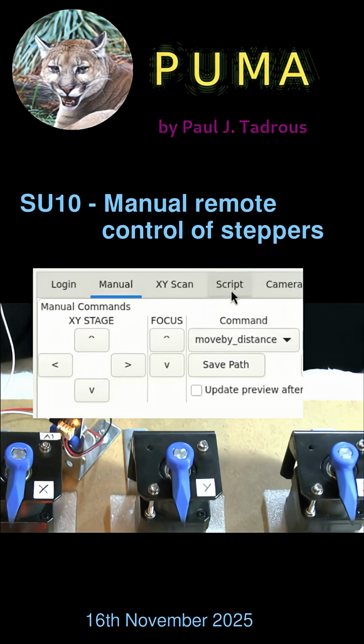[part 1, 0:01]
So I've made a longer video on my Patreon page about the use of these manual control buttons, but I just want to do a quick short video to show you these in action. So these allow you to remotely control the motors of the stage by pushing buttons like this. So this is the X axis. This is the Y axis. And this is the Z axis.
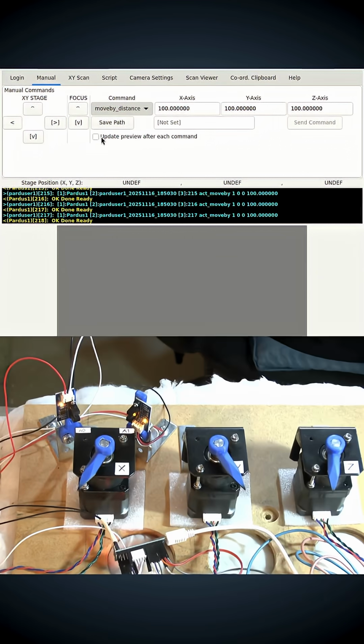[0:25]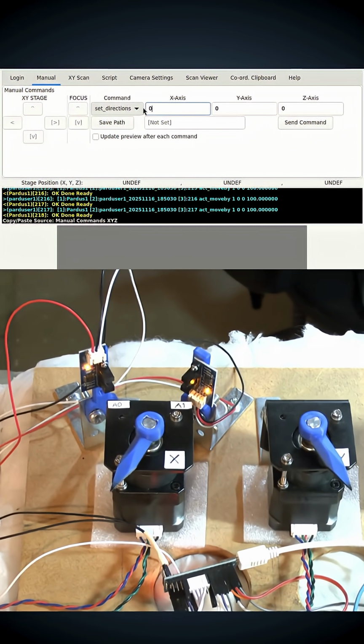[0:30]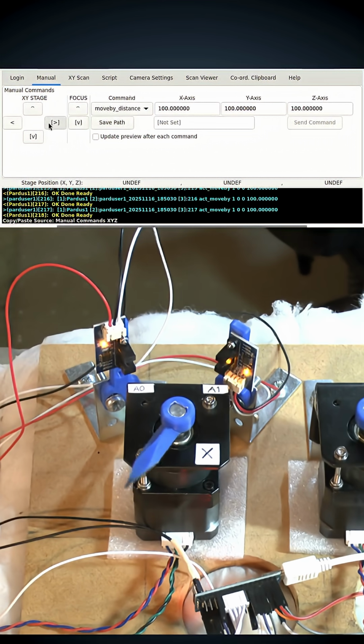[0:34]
Another thing just to point out in this short video is the protection afforded by limit switches. So again, if we go back to the manual motion, the X axis on this test motor board is the only one with the limit switches, and look what happens. I can't move it past that limit switch like that, and the same will happen at the other end. So that's an example of optical limit switches giving you protection of your stage.
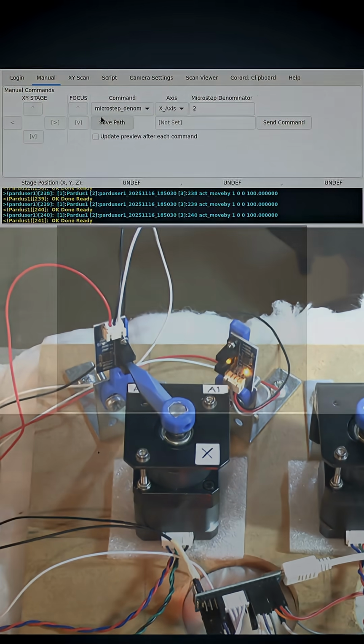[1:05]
Now the PUMA microscope has limit switches on all axes, and another thing you can do is change the microstep size or programmatically, but I'll discuss that in more detail in another video.
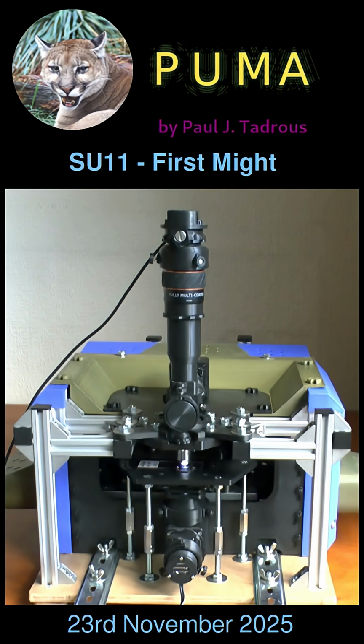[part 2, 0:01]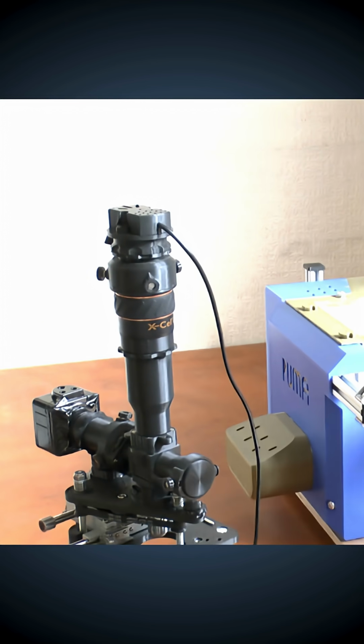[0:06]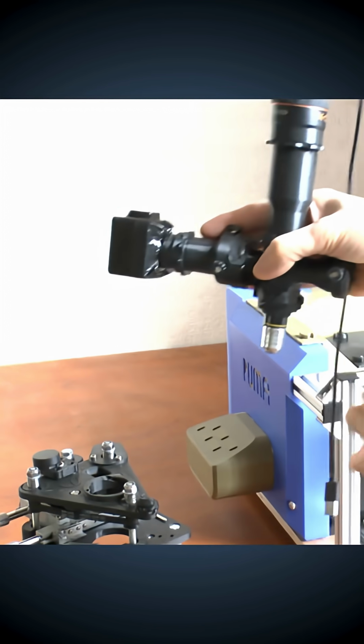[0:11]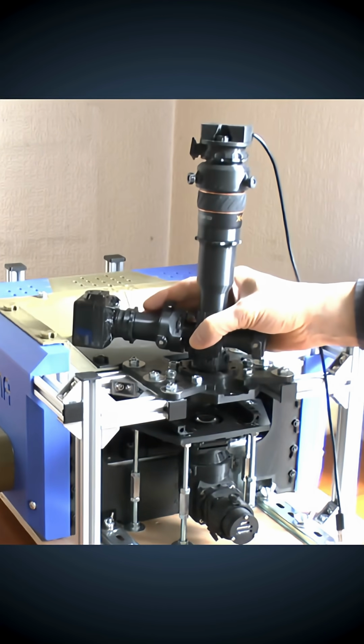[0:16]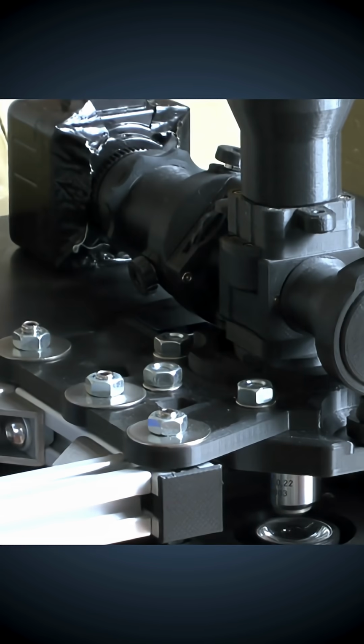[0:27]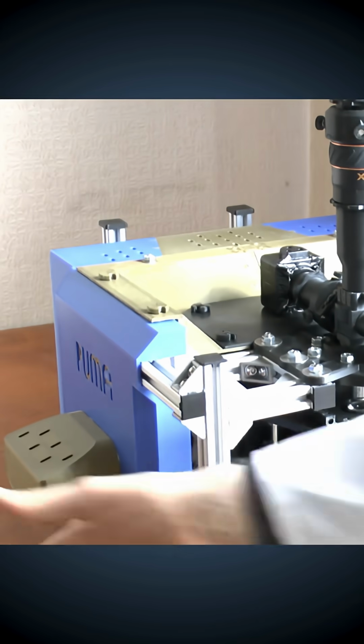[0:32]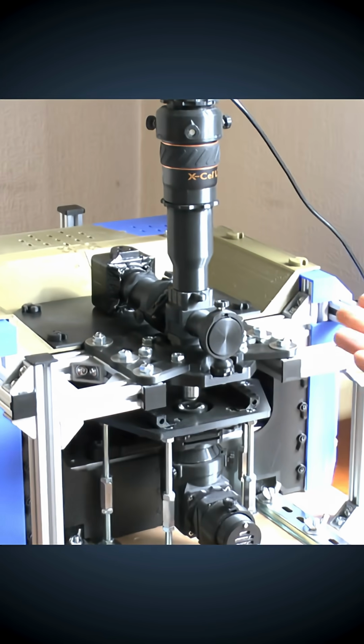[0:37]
So with the optics, I've got it attached at the front with the stabilizer, so I'll just release the front stabilizer like that and unclip it with the quick release mechanism. And we've got the same quick release mechanism in here, so we can just put it in and twist it into place, and there we are. So we have transferred the optics from the standard PUMA stage to the CNC PUMA stage.
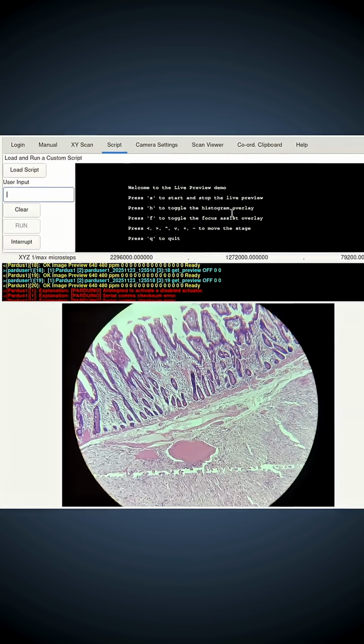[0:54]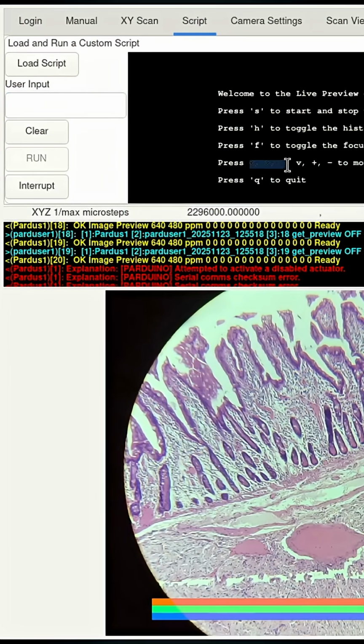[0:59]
So I'll show you a quick demonstration. This is a script, an interactive script I wrote, and this is very similar to the interactive preview, where you can switch the histogram on and off by pressing the H key on the keyboard, as you can see here, and pressing the F will toggle the focus bar on and off. But now I've added these key options here. So if you hit the left and right angled bracket keys, I'll just put focus back in the box there, it'll move the motor. So watch this.
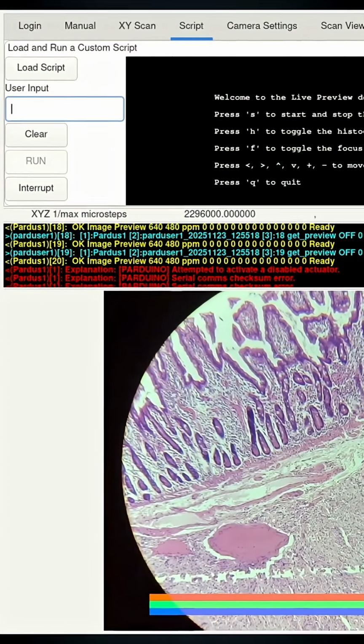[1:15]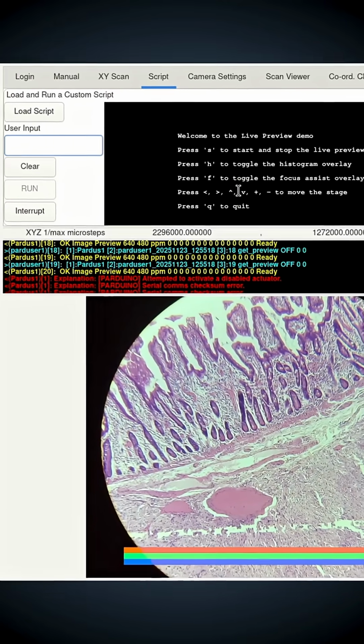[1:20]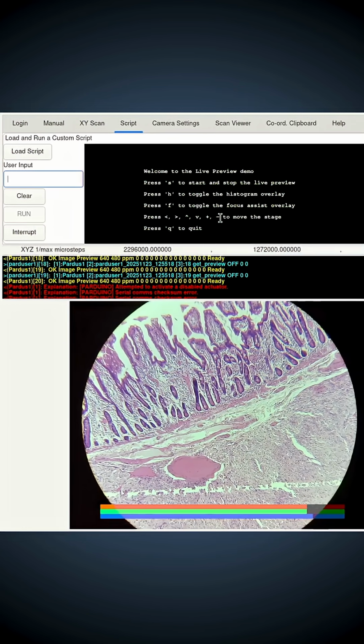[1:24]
And likewise for the V key and the hat key to move the Y axis, and the plus and minus to move the Z. Now you may be wondering, why did I choose these keys? Most of these keys need the shift key to be pressed. That's a bit awkward. Well, I'll tell you why.
It's because I've made some improvements to the manual buttons here. I've added this checkbox. It says divert to script. If you click it, you see a red box appears around the buttons. And what that means is that anytime you click a button, the symbol on that button will be automatically copy-pasted into this entry box here, as if you had typed it from the keyboard. So now we can use the buttons to move the stage.
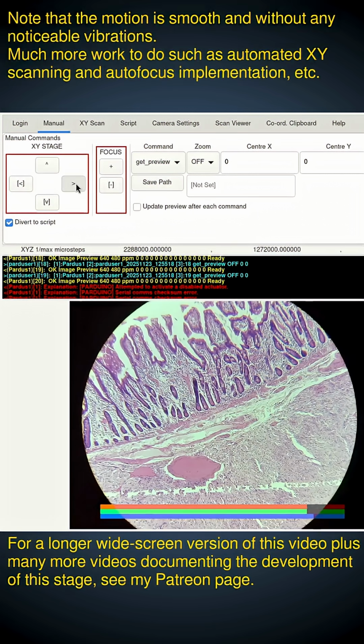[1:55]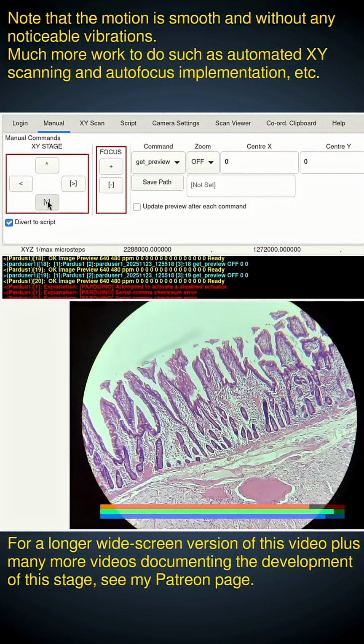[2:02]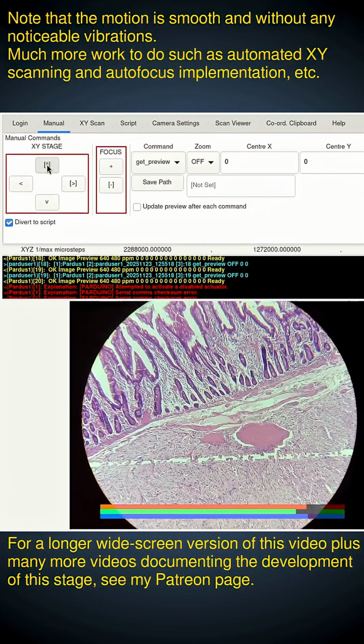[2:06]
Watch this. That's X. That's Y. And the focus. And look what happens to this focus assist bar as I move the focus. It goes right down because we're going blurred. We've gone past optimum focus there. So that's as good as I'm going to get it with this step size.
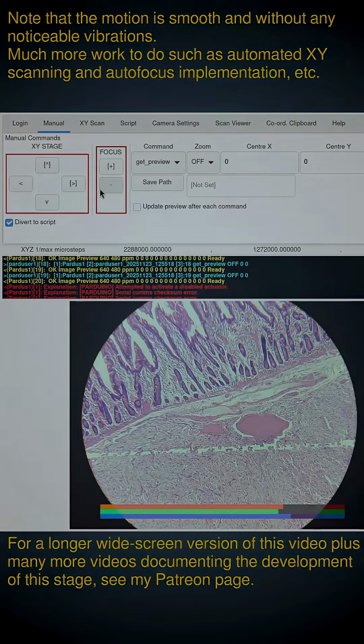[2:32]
Now I've hard-coded into the script the step size for the focus and all the other buttons, but of course this can be managed programmatically as well.
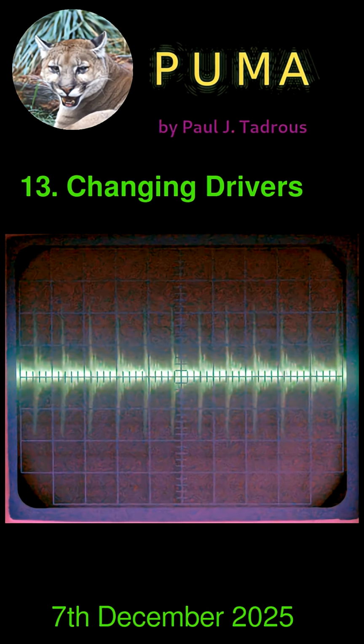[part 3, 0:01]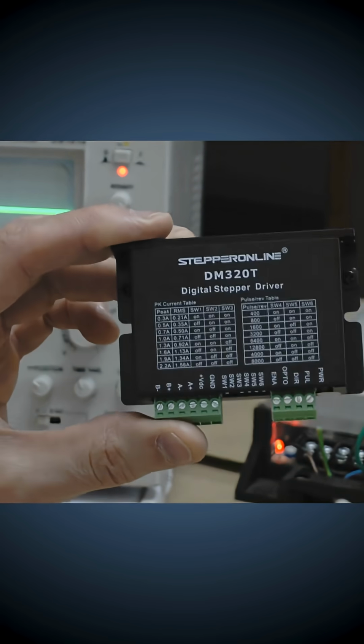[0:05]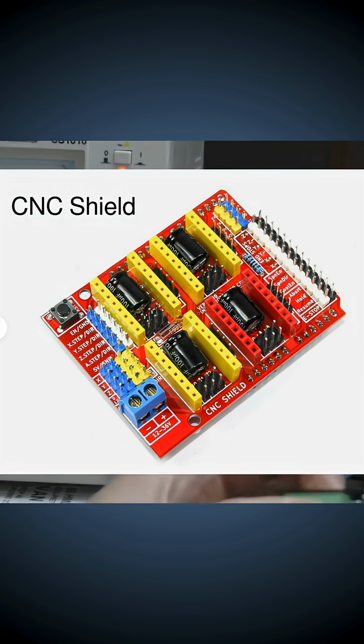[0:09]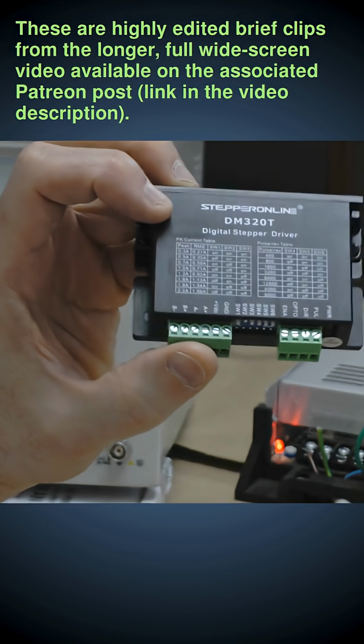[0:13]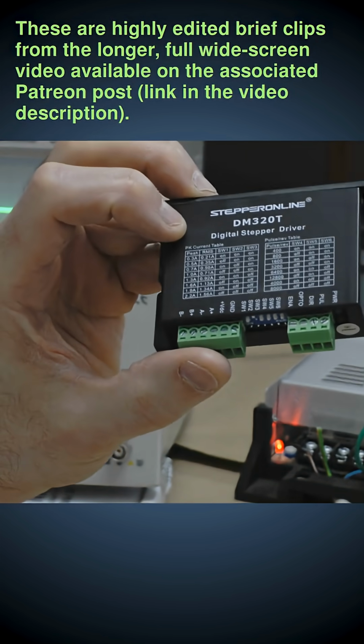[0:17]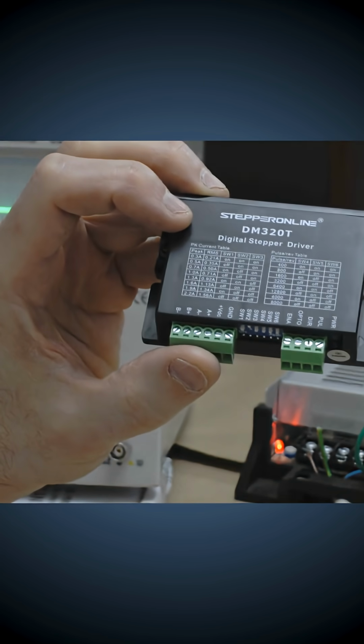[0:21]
I'm going away from using these standalone digital drivers to using the Trinamic drivers on the Arduino CNC shield. So I started off using these drivers, but it's very important for the microscope, because of the tiny, tiny steps that we make for precision motion, that we have the ability to programmatically alter the microstepping size.
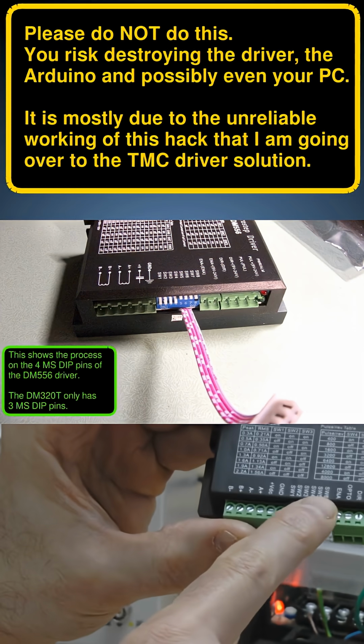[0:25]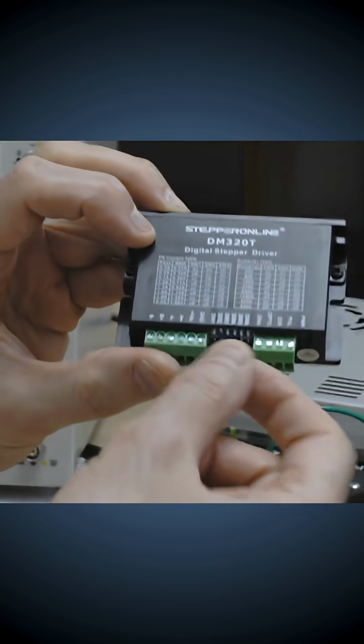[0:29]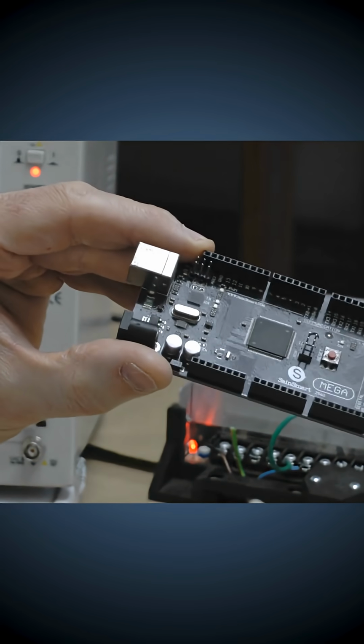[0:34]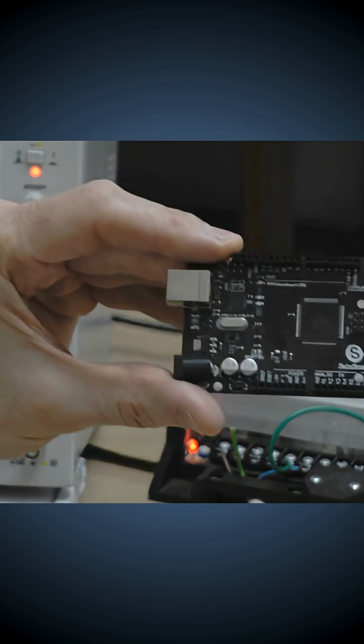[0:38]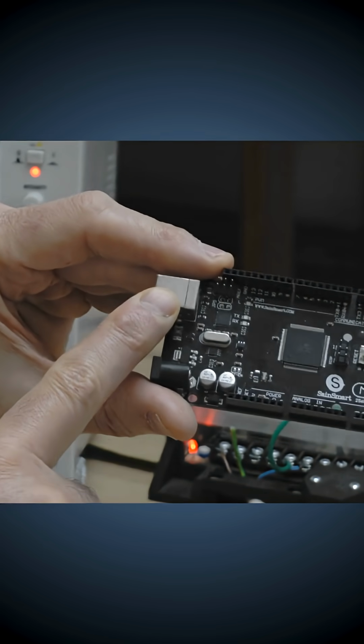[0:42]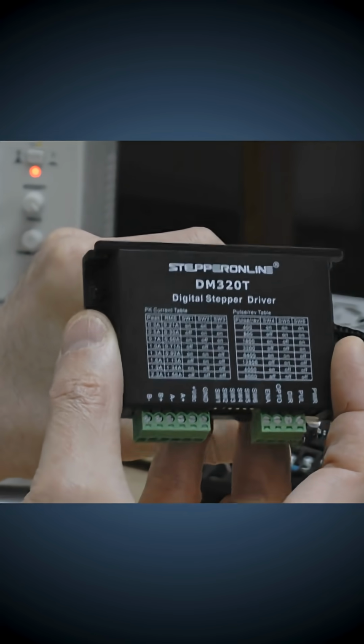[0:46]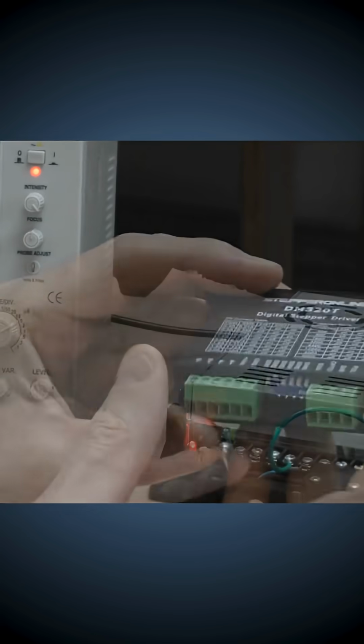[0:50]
So what I did was I took a ribbon cable and I hardwired these three DIP switches to externalize them so I could connect them to the Arduino pins and then switch them like that, programmatically. But the problem with that is you have to have the same ground reference voltage on the Arduino that you have natively in this driver. And when I took my multimeter out and started looking at voltages, I realized that that's not the case.
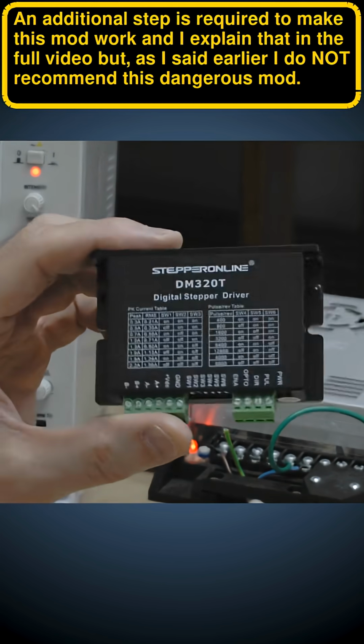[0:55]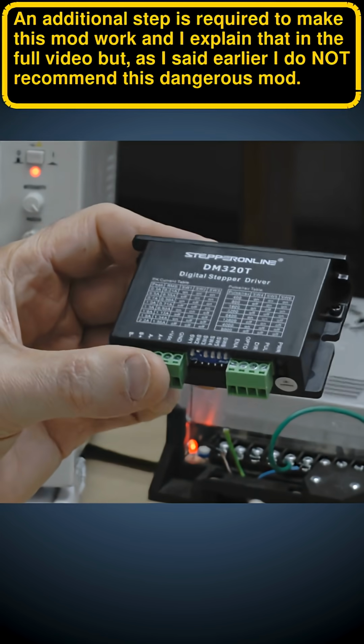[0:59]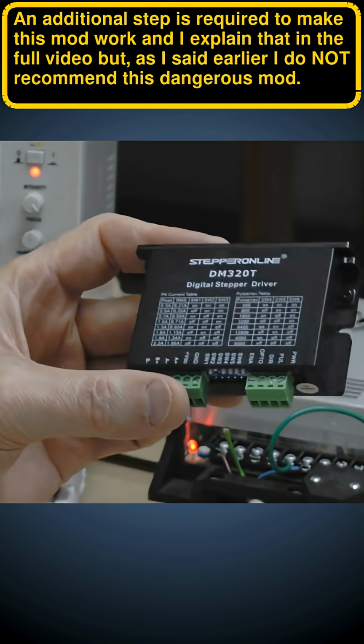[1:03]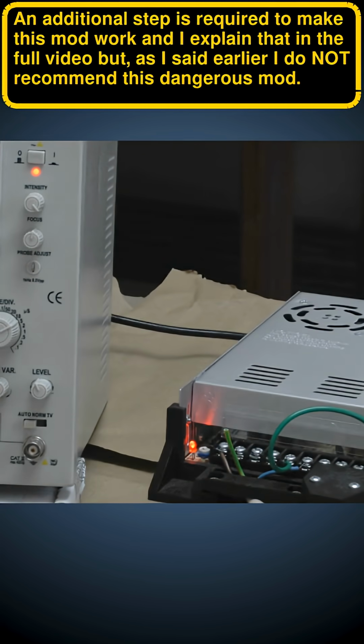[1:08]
And that worked. I was able to programmatically control these drivers doing that mod, but, and this is where all the problems started, I found that I was getting erratic behavior. These, for example, didn't always power up when they were supposed to. I had to switch on and off several times. And I found that I was getting error signals on the serial communications.
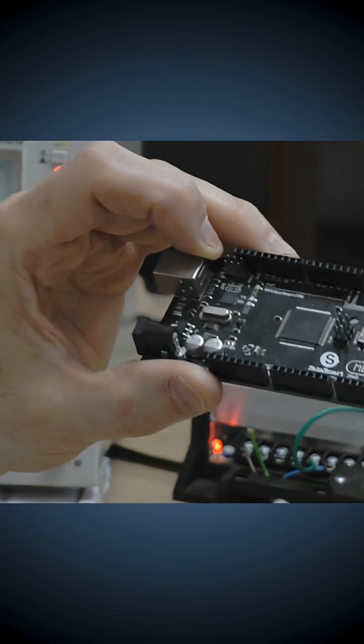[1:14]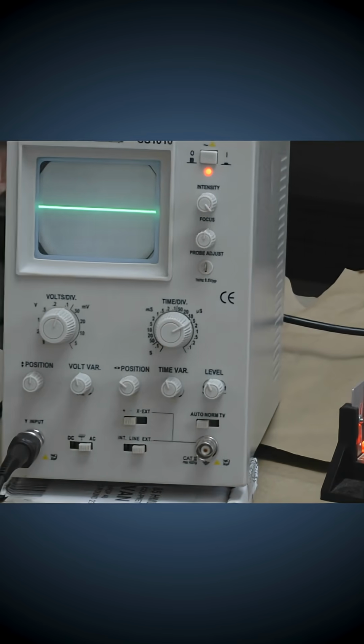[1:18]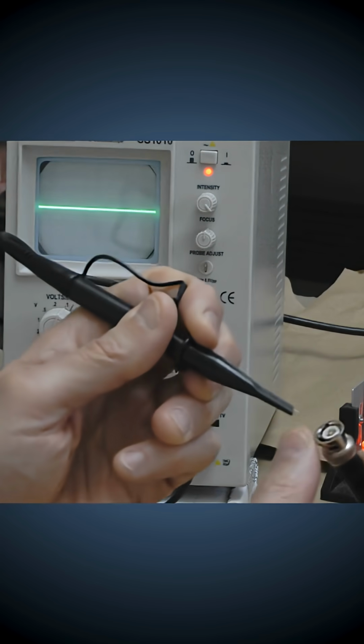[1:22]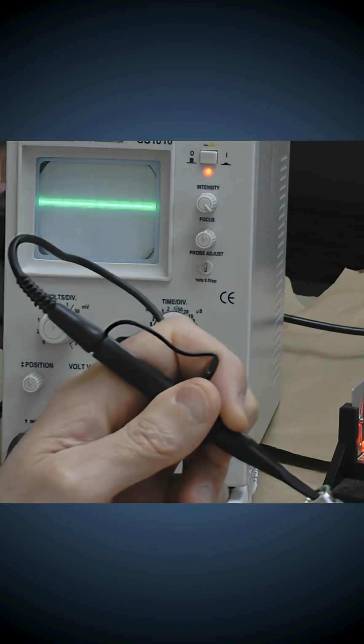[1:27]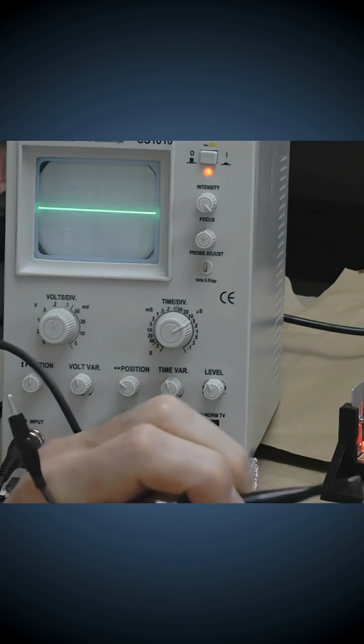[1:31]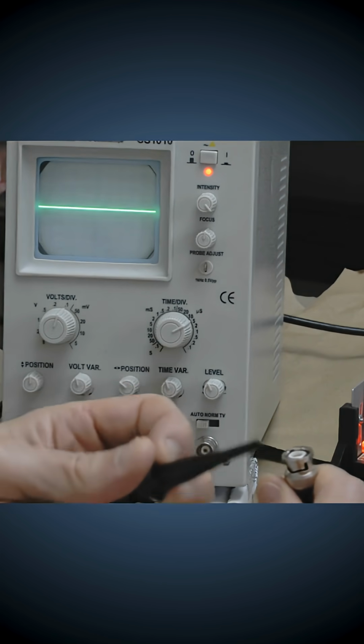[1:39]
Now, I thought maybe I could fix this if I had a look at the power supply and see if there was anything to do with the power supply I could fix. So that's what the cathode ray oscilloscope is for. If I put the probe on the center, which is the positive line, you'll notice that I've got a signal. But the thing is, it's also present on the negative line. So if I put it on the casing of the BNC like this, you get exactly the same signal.
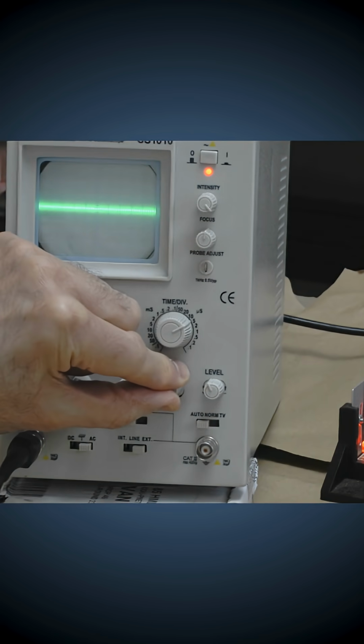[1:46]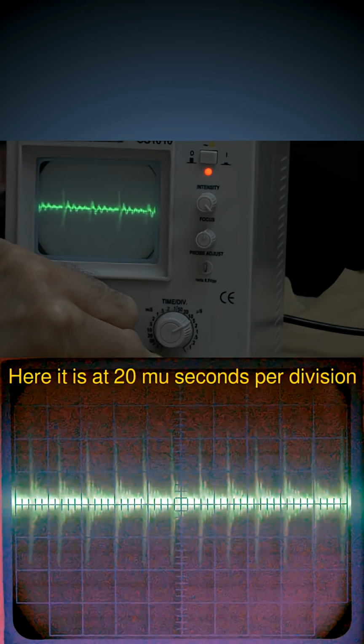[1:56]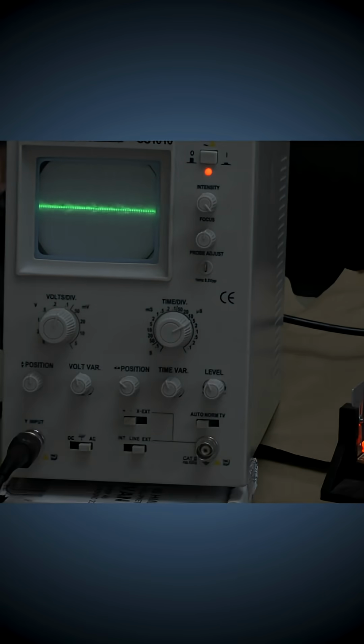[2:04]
So I'll leave it attached to the casing like that. And I'll show you this signal in a bit more detail. If I adjust the time base, you'll notice it's actually quite big spikes. You see that? And that is plus and minus four large divisions, which is 0.4 of a volt, fluctuating on the supposedly ground earth line. So I thought, okay, perhaps if I do something about this, it'll fix the problem.
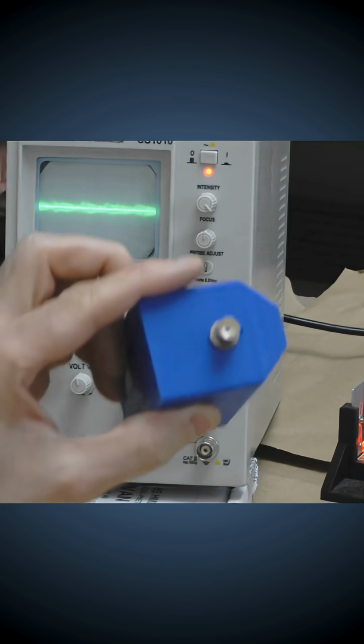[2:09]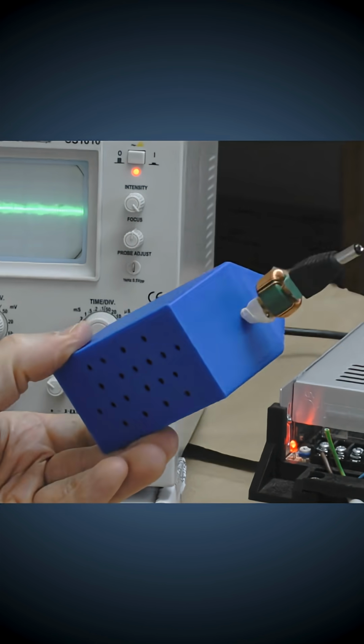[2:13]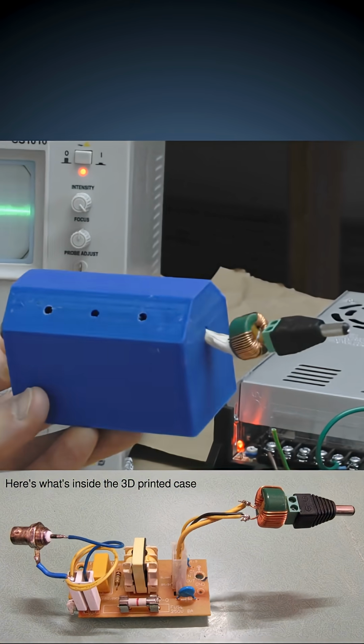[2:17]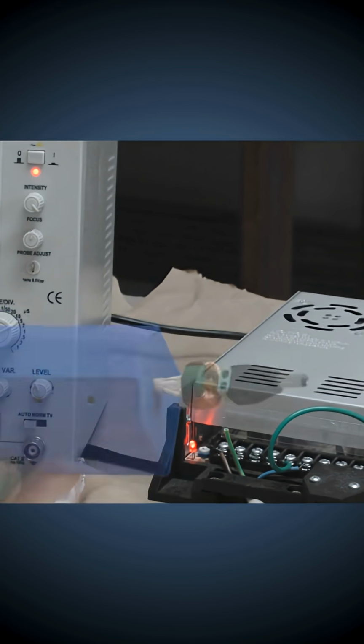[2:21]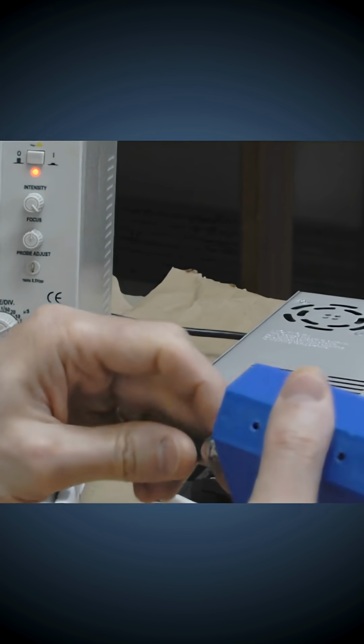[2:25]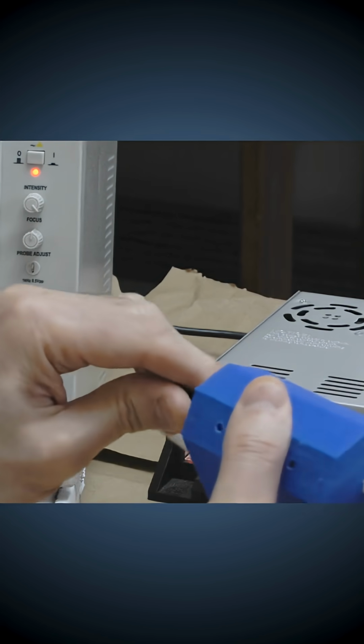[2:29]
So I built this little filter, and that's why I put a BNC on the power line. This is a power filter. It filters out unwanted AC from DC lines. And this is based on a PCB that I got out of an old microwave, and I just modified it a little bit. So let us plug the DC output from the power supply into this filter.
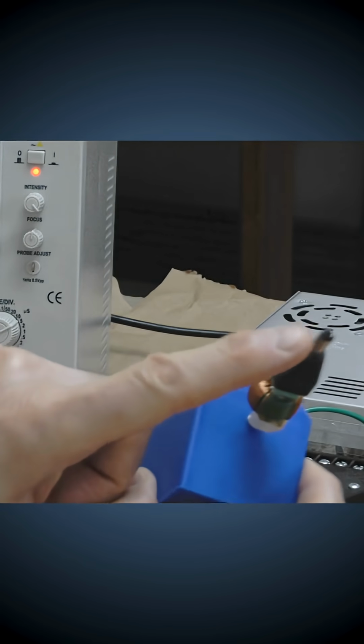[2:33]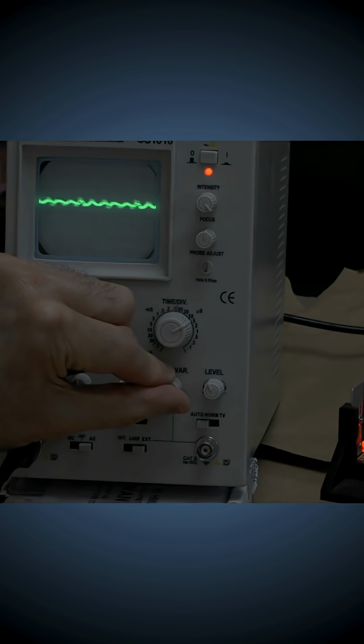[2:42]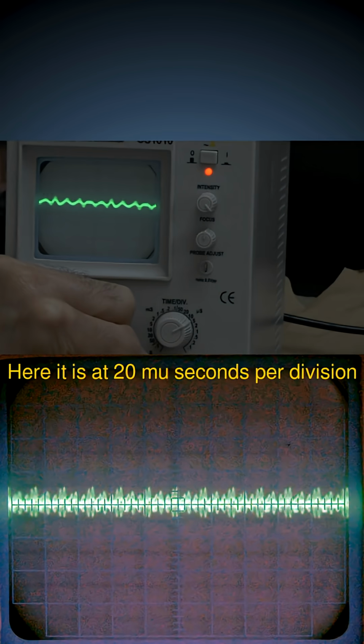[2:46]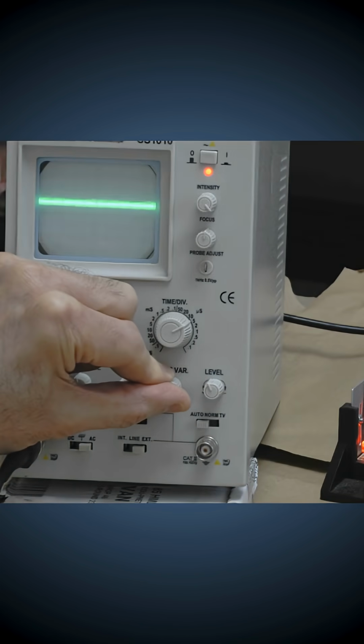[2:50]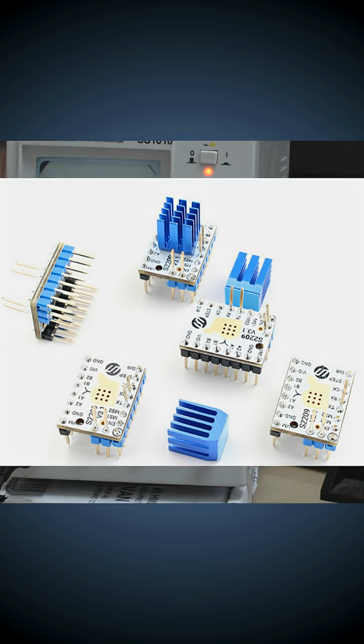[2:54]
And now I'll put the oscilloscope on the output end. And there's still a signal there, but it's greatly reduced. So if I just now adjust this, you'll see the peak-to-peak difference is very, very much smaller. It's about one, just less than one large division. But unfortunately, this did not solve the problem. So that's why I've decided to move over to using the Trinamic drivers using the Arduino CNC shield.
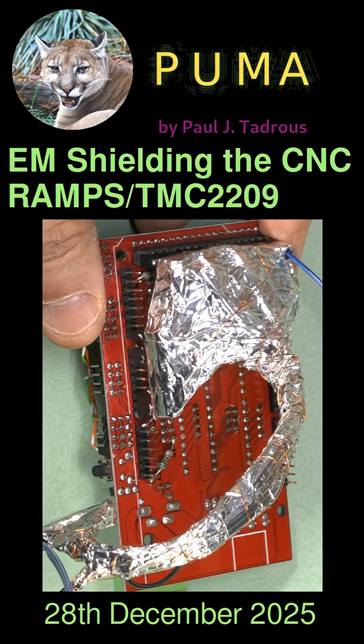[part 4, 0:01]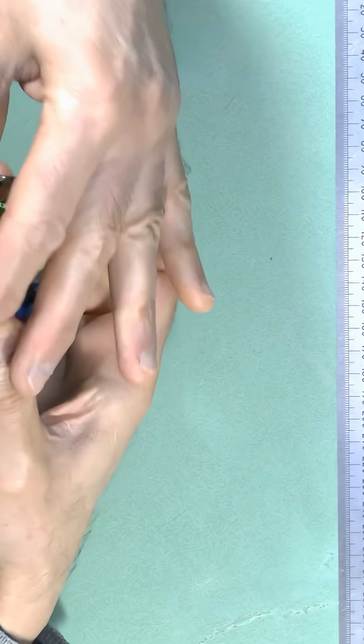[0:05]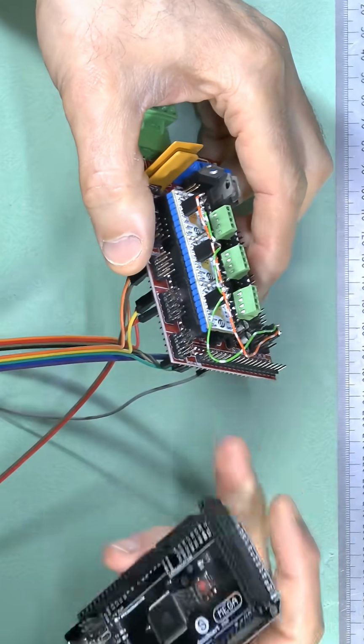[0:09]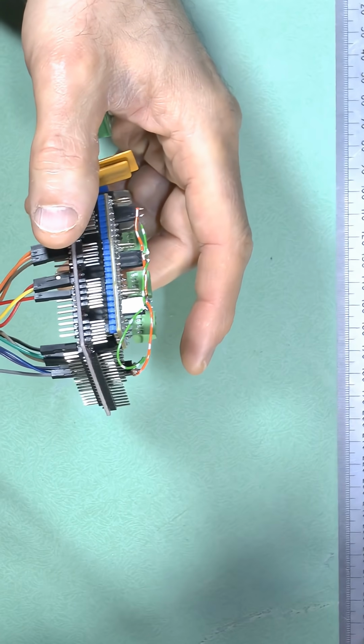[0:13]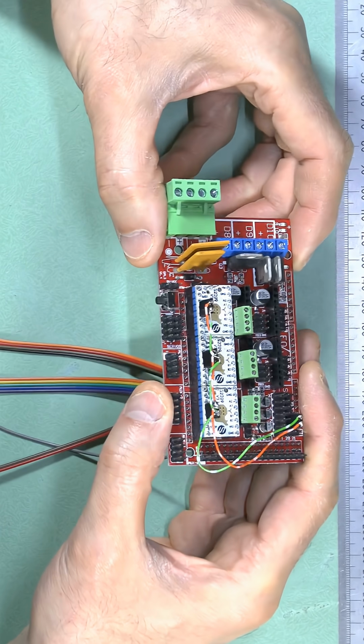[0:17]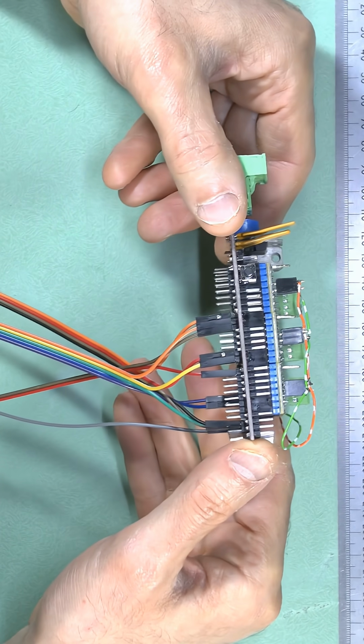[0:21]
So now we come to connecting our modified customized RAMPS board to the Arduino. Originally this RAMPS board is designed to just plug into the Arduino, and these pins are mapped to certain pins in the Arduino according to certain standard 3D printer softwares. But we're not using this to build a hobby-level 3D printer. We're using this to build a precision microscope stage, and our needs are different.
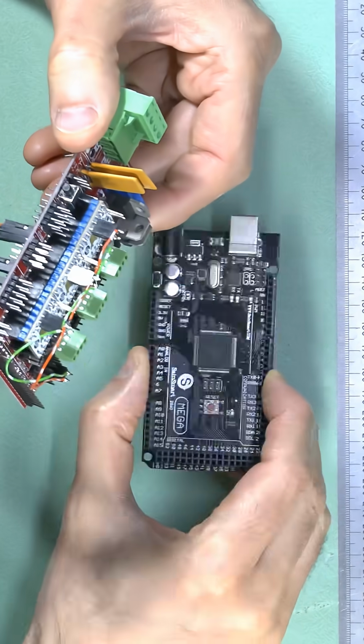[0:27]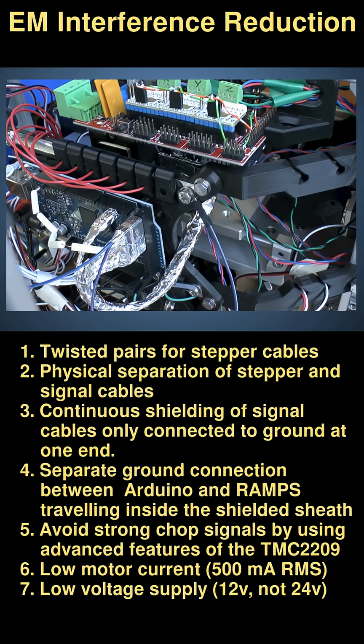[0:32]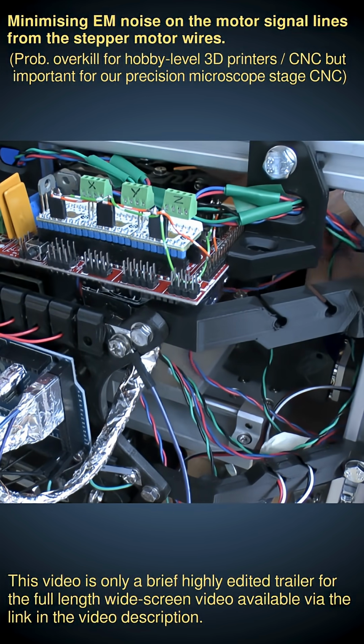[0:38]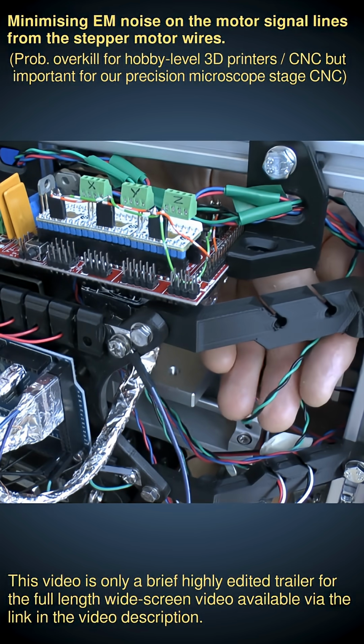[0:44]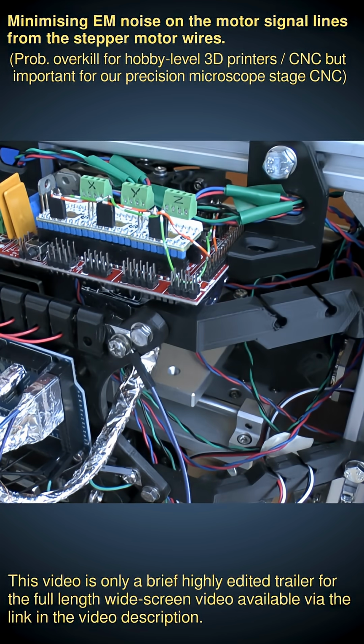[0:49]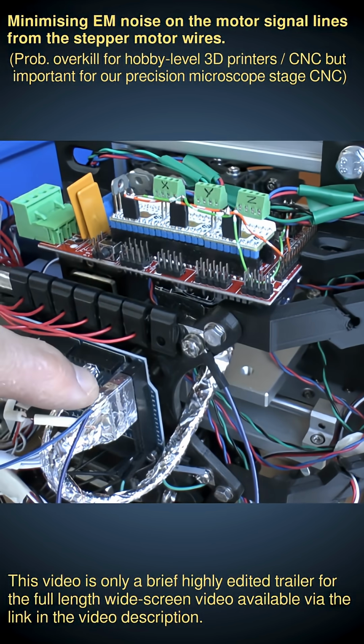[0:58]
So I'm going to be mapping the pins of our drivers to custom pins on the Arduino, which are more suitable for precision microscopy. So here is a summary of our electromagnetic shielding precautions. Firstly, all the motor cables, as you can see here, are in twisted pairs. This minimizes emission of unwanted EM signals. Also, the motor cables come up from the top and connect onto the RAMPS board, as you can see here. But the signal cables all come from the bottom and connect onto the Arduino, as you see here. So we're physically separating the motor cables from the signal cables.
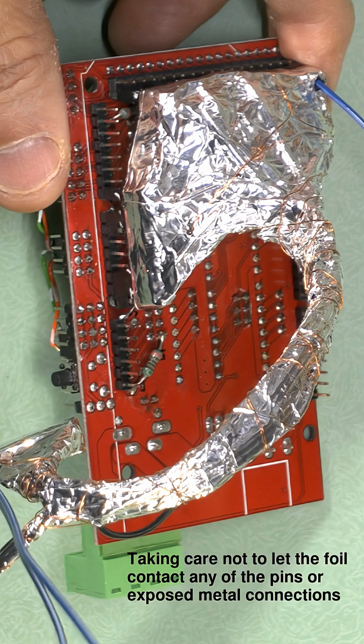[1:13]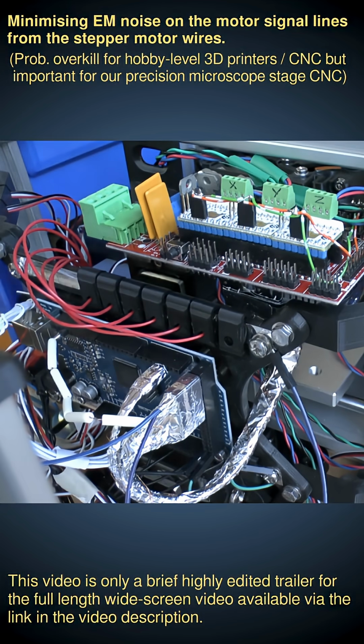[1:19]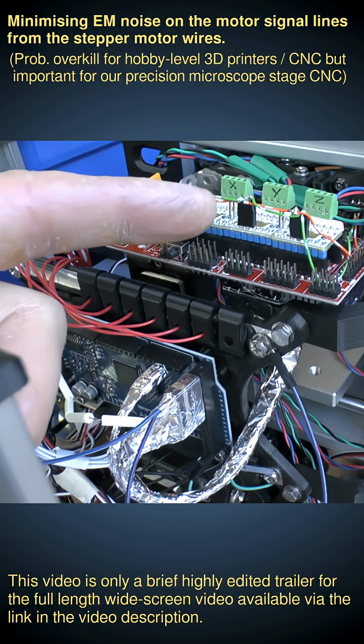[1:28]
Also, we've shielded the signal cables with foil sheeting and with a copper wire wrapped around here to make sure there's good conductivity across all the shielding. And the copper wire comes out here and goes into the ground of the Arduino. Also, separately to this, we have our ground connection from the Arduino to the RAMPS. And the ground connection is a separate wire that comes in here and travels inside this sheath with all the other signal wires.
So we're not using the ground sheathing, the ground protection mesh, as our ground connection to the RAMPS. It's a separate ground connection. Yes, they are both connected to the same ground in the Arduino, but you mustn't use the shielding as your primary ground connection.
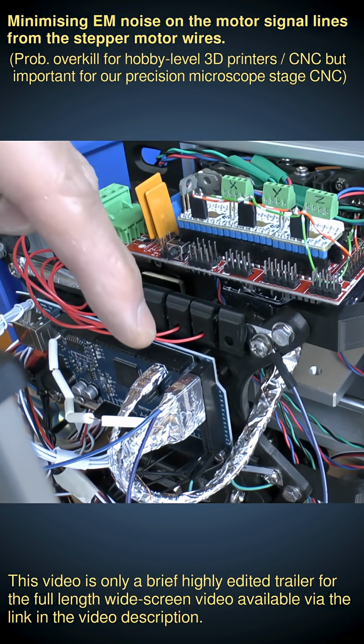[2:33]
And the other thing, of course, is that we're using the Trinamic drivers, which have StealthChop, so they don't give very high emission signals. And we are using relatively low current motors, NEMA 11 with 500 milliamps RMS. That helps. And also, we're using only a 12-volt supply as opposed to a 24-volt supply. So all those things together help to mitigate the effects of unwanted EM radiation noise from the motor cables to the signal cables.
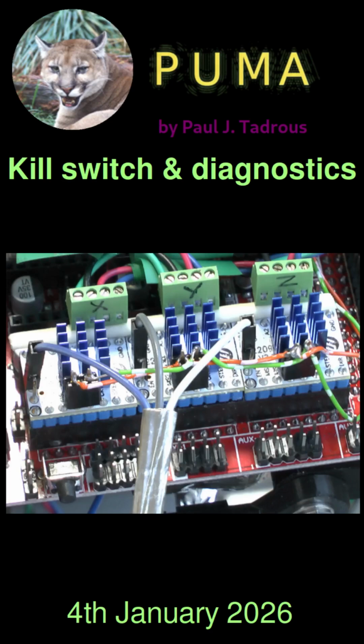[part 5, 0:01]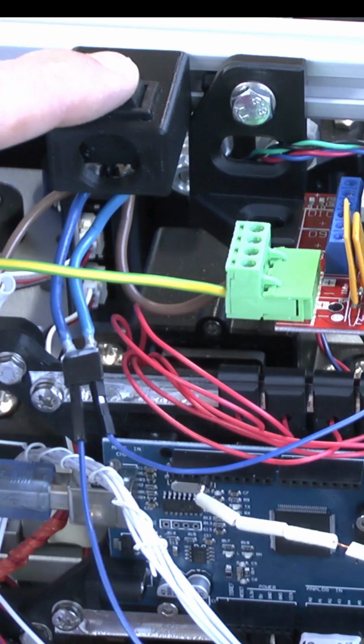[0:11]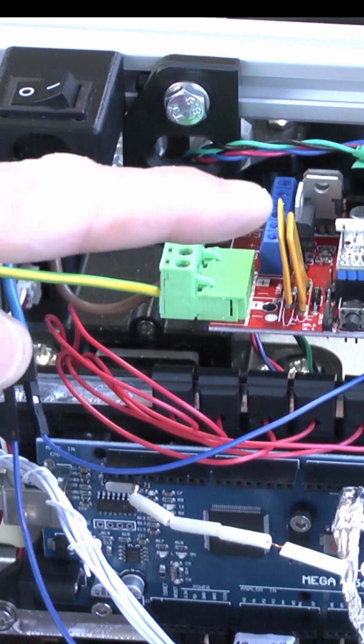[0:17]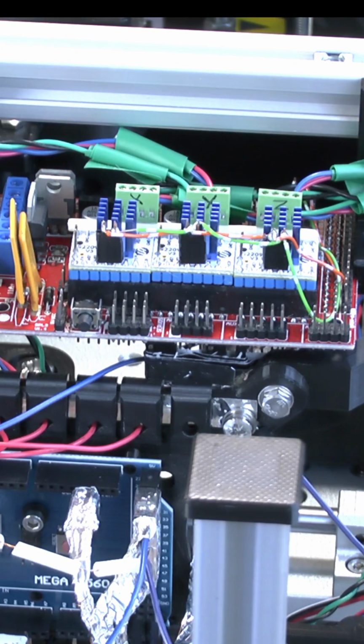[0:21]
Now today I'm going to discuss some final safety features and connections that need to be made for the safe use of these TMC drivers. Now I've already spoken about this switch that allows you to pass power to the RAMPS board for both the VMOT and the VIO simultaneously. So that's an important safety feature, or we could damage the drivers due to unbalanced supply and parasitic supply.
Another safety feature, you'll notice now that I've actually put the heat sinks on the drivers. These drivers will shut down if they're overheated. So that's a good safety feature of the driver itself.
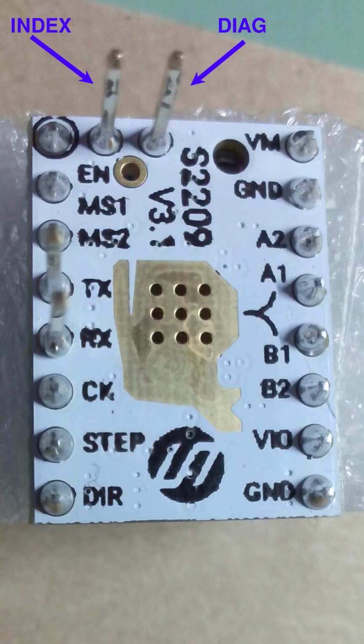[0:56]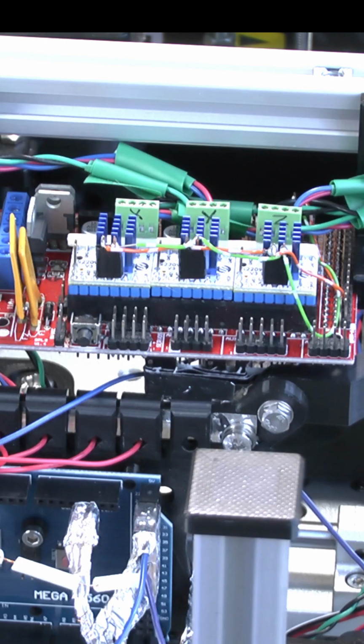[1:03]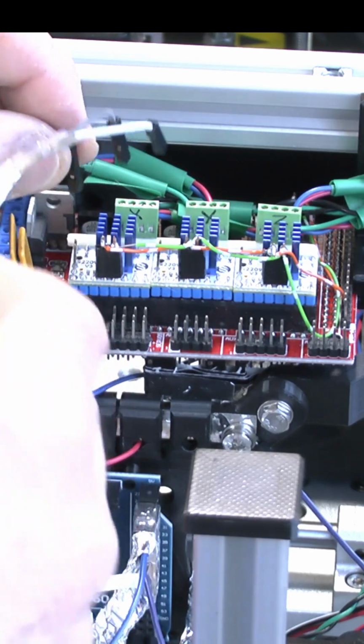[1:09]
Now the next safety feature is getting diagnostic information from these drivers using the DIAG pin. And the DIAG pin on these particular drivers is this pin over here. But if you have a different version of this stepstick breakout board, then your DIAG pin may be somewhere else. So I made this cable so we can connect the DIAG pins of each of these drivers
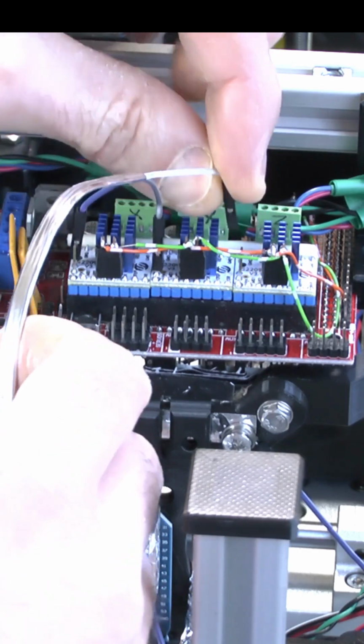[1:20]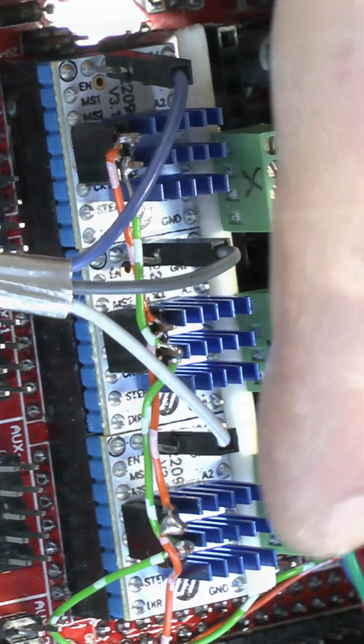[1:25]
to the Arduino board. And in my software, I've written it so that you use analog inputs for this, although we will be using them as digital pins. And here's a close-up showing the connection to the DIAG pin.
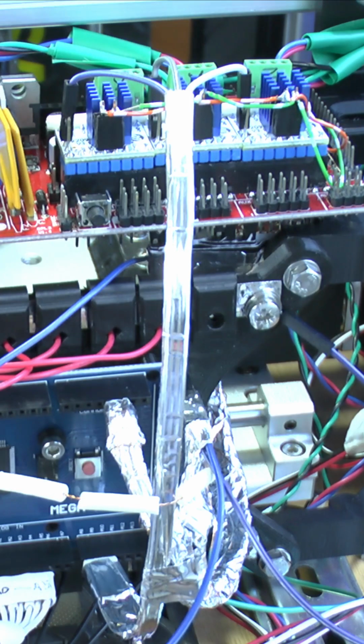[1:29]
So now that we have these DIAG lines connected to the Arduino, we can monitor for stalling using the StallGuard4 system of the Trinamic drivers to protect the stage in case something gets in the way of it, or in case one of the limit switches fails or we connect it wrongly. And it also allows us to detect abnormal states.
So the Trinamic drivers will push the DIAG pin high if there are problems such as driver overheating, or if one of the motor cables comes loose or breaks for some reason, or things like that.
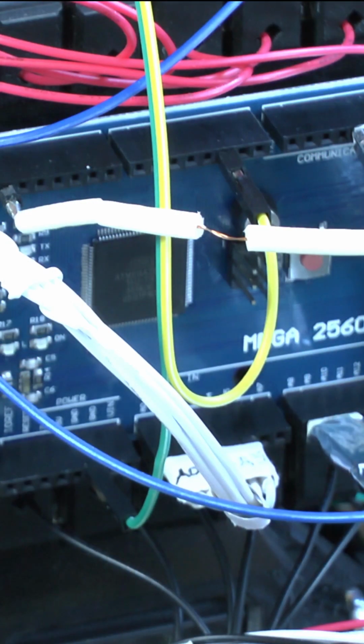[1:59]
And finally, and very importantly, we need to wire up a kill switch. And I've done that with these two DuPont wires. So one wire goes to ground, and the other wire, the yellow wire, goes to digital pin 2. And digital pin 2 will be configured as an input with an internal pull-up resistor.
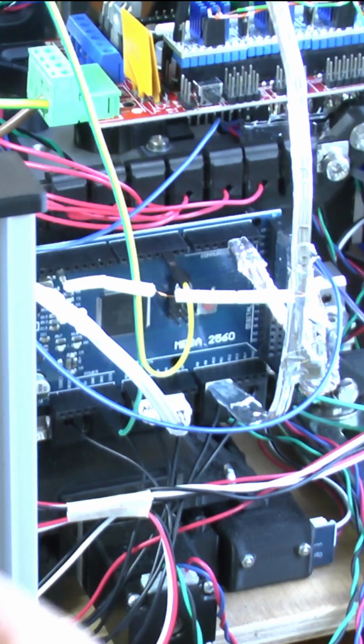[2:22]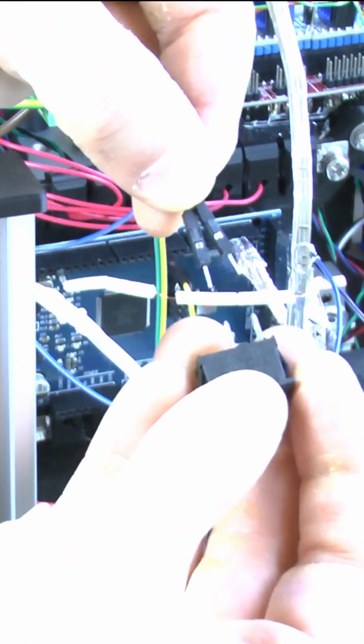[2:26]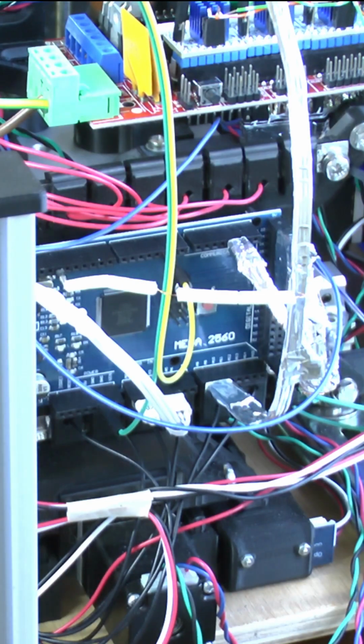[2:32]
And if I zoom out, the other ends of these wires will go to a simple on-off switch, and I'll probably solder these on once I decide what switch to use. But essentially, that's what a kill switch looks like in hardware.
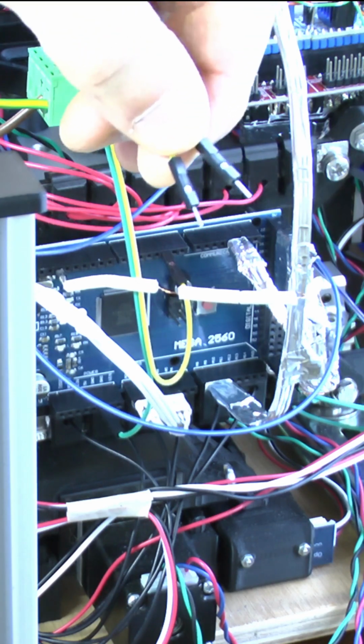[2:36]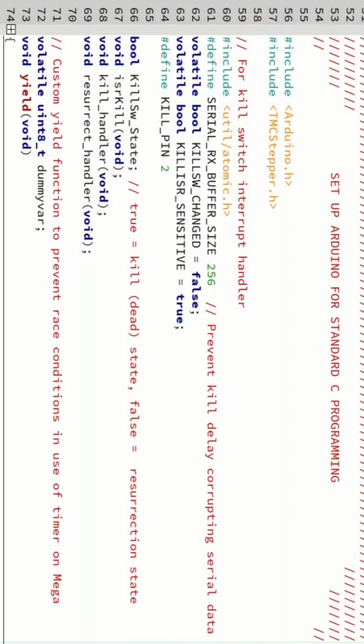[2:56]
So when the two ends of these wires are joined together by the switch, then digital pin 2 will be pulled to ground and will read as low. And when the switch is open, these two are separate, and the internal pull-up resistor will pull digital pin 2 to high. And so this is how we implement the kill switch in software.